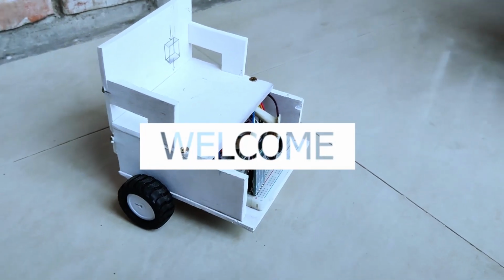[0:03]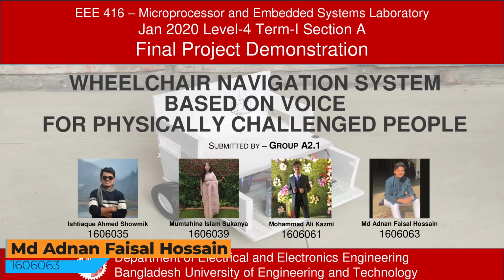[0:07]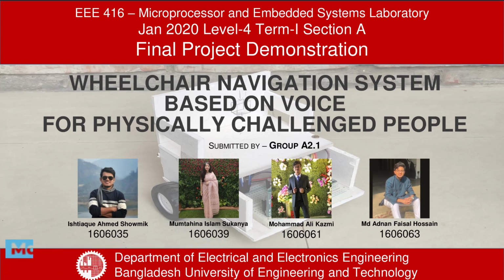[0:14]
Our project is a Wheelchair Navigation System based on voice for physically challenged people. Here you can see our project outline.
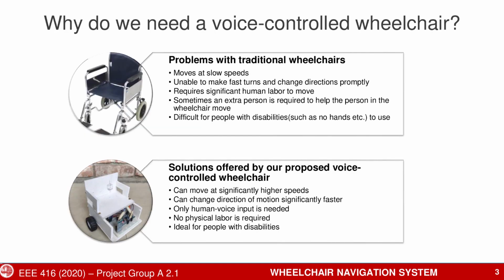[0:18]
So why do we need a voice-controlled wheelchair? Traditional wheelchairs are slow, unable to change directions quickly, and require significant human labor to move. They are especially difficult for people with disabilities to use. Our proposed voice-controlled wheelchair solves these problems by moving at higher speeds with better navigation systems, and it operates only on human voice without the need for any physical labor.
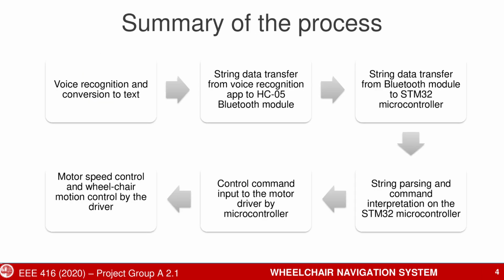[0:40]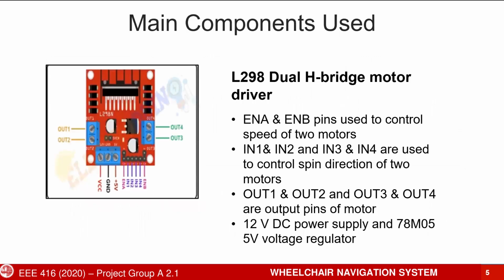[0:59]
Here is a summary of our process. First, we perform speech recognition on the input voice command and convert it to text. We then transfer the text from our mobile device to the STM32 microcontroller via the Bluetooth module. The microcontroller interprets the command and sends it to the motor driver, which then controls the speed of the motors connected to the wheels. There are three main components.
First, we have an L298 motor driver. It has two enable pins used to control the speed of the motors. In1 to In4 pins are used to control motor direction.
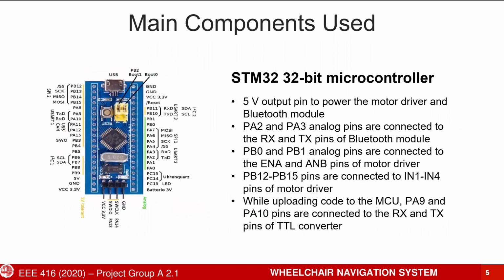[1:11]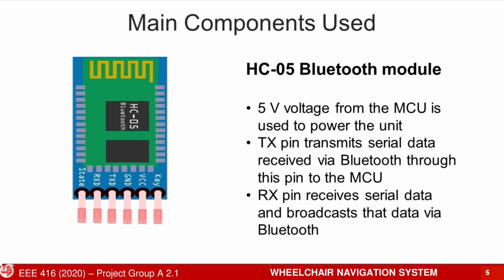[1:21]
Next, we have our STM32 32-bit Blue Pill microcontroller. STM32 receives UART serial data from the Bluetooth module using an interrupt-driven reception method. Finally, we have our HC-05 Bluetooth module. We use the BT Voice Control for Arduino app to perform speech-to-text recognition.
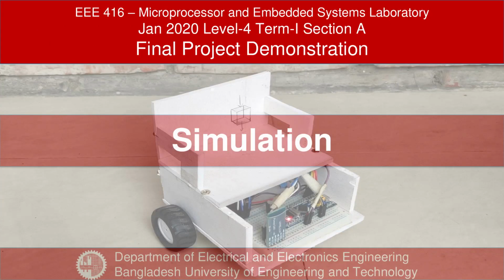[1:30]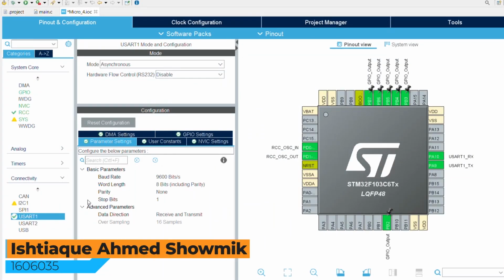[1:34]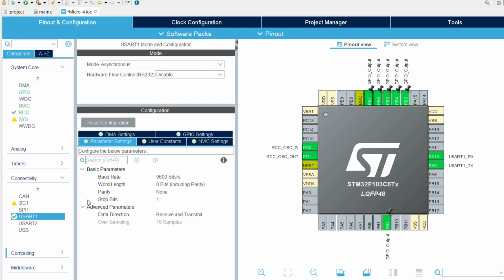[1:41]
Now I will explain how we programmed our microcontroller unit using STM32CubeIDE. We used this platform to generate the hex file for simulation in Proteus 8.6. Here we can see the pin configuration.
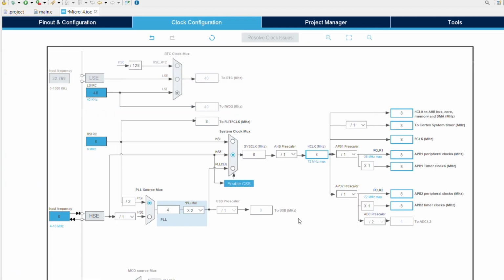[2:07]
We are using pins 9 and 10 as UART1 pins for serial communication with the Bluetooth module. The baud rate is set to 9600 bits per second. As you can see, pins PB2 to PB7 are used as output pins that will serve as the control pins of the motor driver. Now, in clock configuration, the operating frequency was set to 8 MHz and the rest of the parameters are set to default.
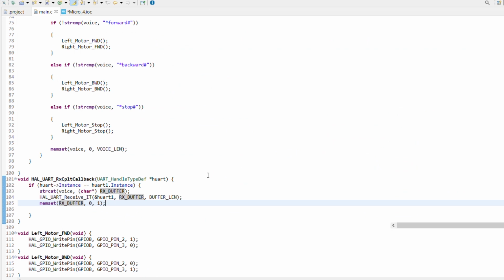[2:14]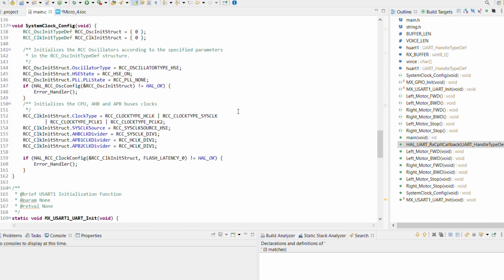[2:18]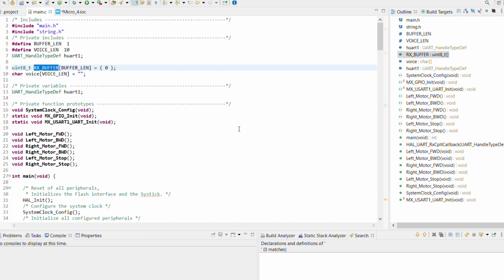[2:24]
Now, as we jump to the source code, we can see the auto-generated clock configuration function, our UART1 and GPIO pins initialization function. We defined a variable RX buffer to act as the buffer for incoming data, and a string variable voice to hold the voice string. We created a few functions for motor control.
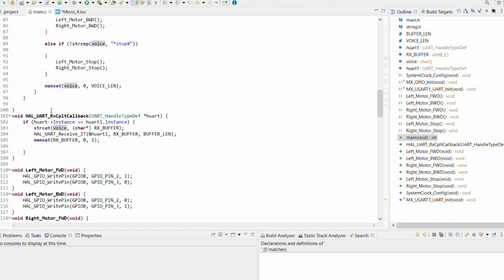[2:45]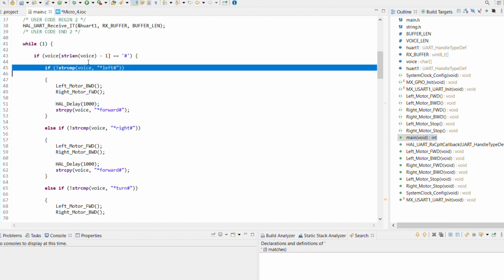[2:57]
In the main function, we are invoking the UART receive IT function to receive serial UART data in interrupt mode. After each byte is received, a callback function is called, and the received character is concatenated to the voice string. In the while loop, we are searching for the hash symbol that marks the end of a string. The voice string is compared with predefined commands. If a match is found, the intended operation is performed, and the voice string is reset to 0 to restart the procedure.
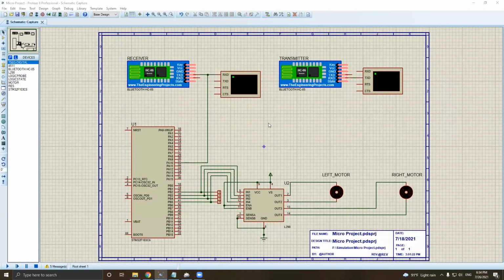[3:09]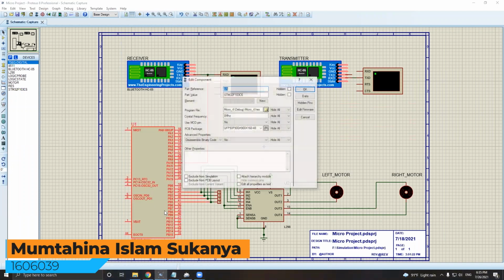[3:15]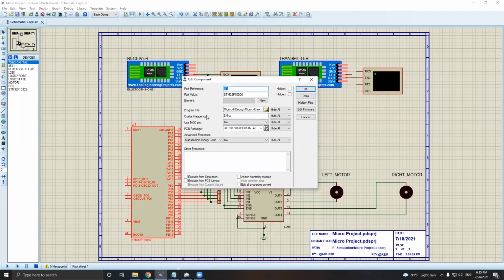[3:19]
So this is the simulation part of our project. Here we've used an STM32 IC. Inside the IC properties for the simulation, we've used the hex file that we generated from the STM32CubeIDE as the program file. For crystal frequency, we've set it to 8 MHz, which is what we used in the STM32CubeIDE as well.
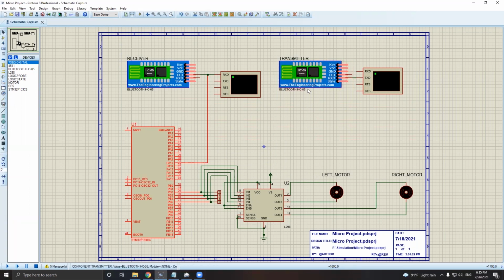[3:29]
Along with this IC, we're also using two Bluetooth modules. One is the transmitter and the other is the receiver. We're also using a motor driver and two motors to complete our simulation setup.
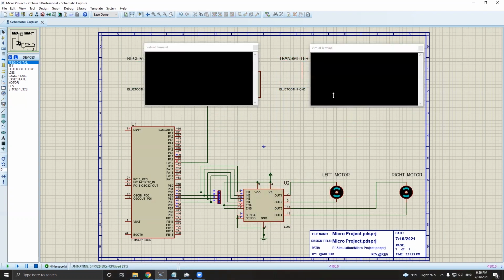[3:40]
Now, if we move on to the operation part of our simulation, we'll be typing the commands into the virtual terminal. The transmitter side will not be visible, but the receiver side will be visible. So first we'll be typing in the command forward, and we can see that both the motors are starting to rotate clockwise.
And now if we type in another command, backward, both the motors are turning counterclockwise in the same direction. Now if we type in the command left, then to turn left, at first the motors will be turning in opposite directions, and then they'll start turning in the same direction, because after taking the left turn, the device will be starting to move forward.
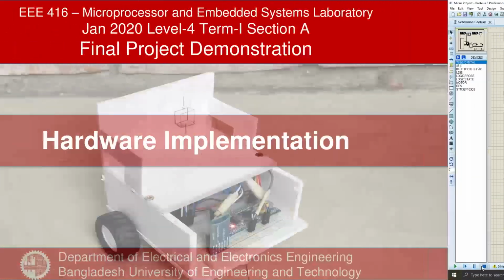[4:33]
Now if we type our command right here, we can see again the motors are turning in the opposite direction in the beginning, then eventually they start to rotate in the same direction and the vehicle goes forward. And finally, if we type in the command stop, then the whole device turns off and thus executes the whole operation, and that's the end of our simulation project.
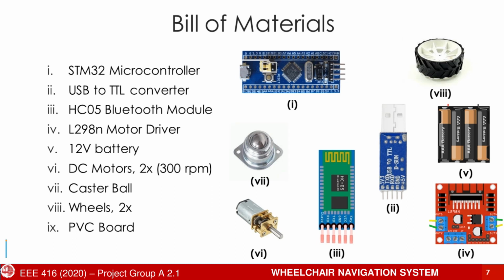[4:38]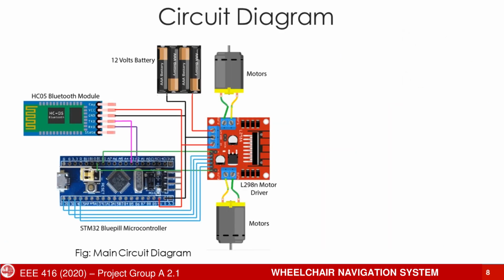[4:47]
Hello, I'm Roll61, and now I'll be talking about the hardware implementation of our project. Here you can see a list of hardware materials that were used for our project. Here is the circuit diagram for our project.
STM32 microcontroller is the main programming unit of our whole project. HC05 Bluetooth module is being used for wireless communication. The commands are received by the Bluetooth module, which are sent to the microcontroller. After that, according to the instructions of the microcontroller, the L298N motor driver operates the two motors connected to it. We are using two 300 RPM DC motors and they have rubber wheels attached to them.
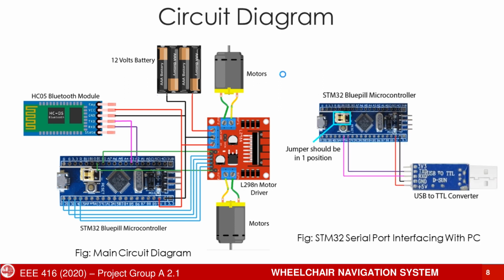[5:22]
Finally, we have designed a wheelchair prototype using PVC boards and there is a caster ball in the center to balance all the equipment on it. The serial port of STM32 is interfaced with a computer by using a USB to TTL converter with the following connection. We are using Arduino IDE to program the microcontroller. Now we will have a look on our source program.
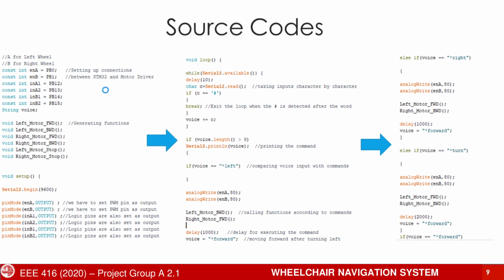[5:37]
So initially we are declaring all the ports that were used in hardware connection. After that, some functions are specified according to all the possible commands by a user. In the loop function, we are checking for inputs given by the user. The input is taken character by character and the hash symbol indicates the end of an input string. After that, the input string is stored in the string named voice.
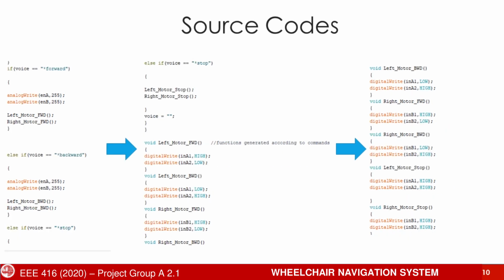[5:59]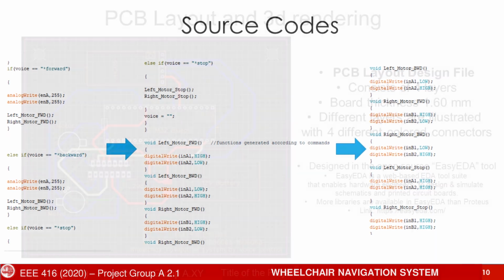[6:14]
Our wheelchair can perform 6 automated tasks and so we match the input string with these 6 commands. If there is a match, then the wheelchair executes the command accordingly with the help of our specified functions. These functions mainly control the wheel movements according to the instructions that are given.
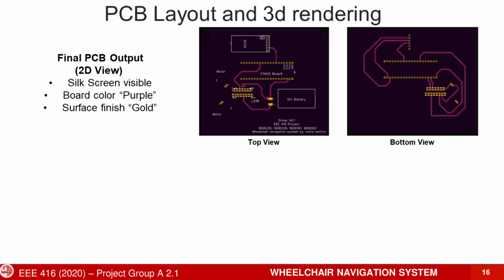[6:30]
For our project, we have also designed a PCB layout. Here you can see our PCB layout design file. It consists of 4 layers, which are illustrated with 4 different colors. PCB is designed with open source EasyEDA tool. Here you can see our final PCB output, and here is the 3D rendering of our PCB.
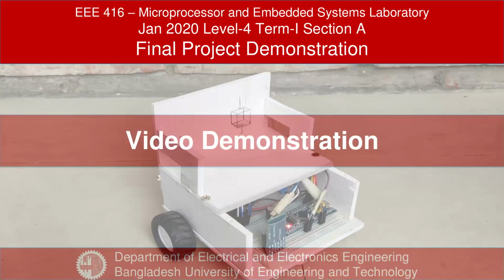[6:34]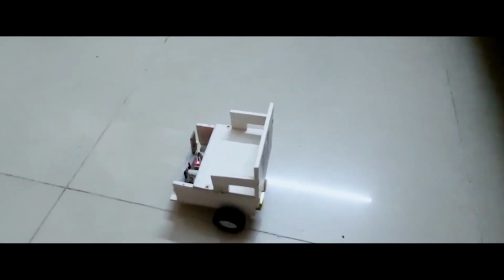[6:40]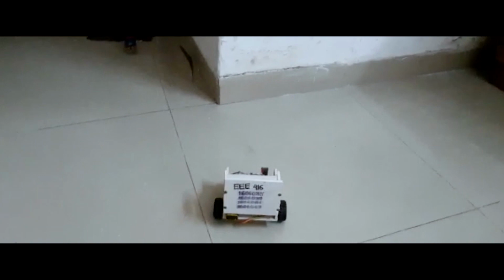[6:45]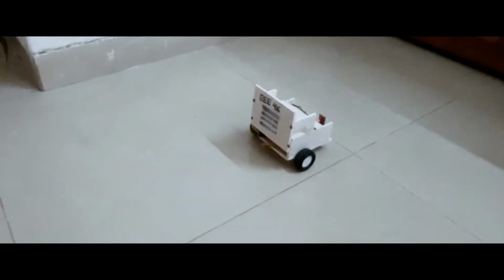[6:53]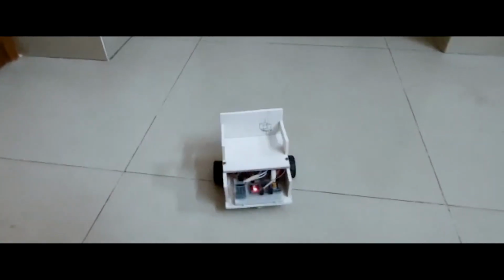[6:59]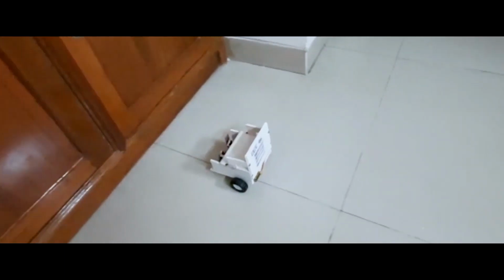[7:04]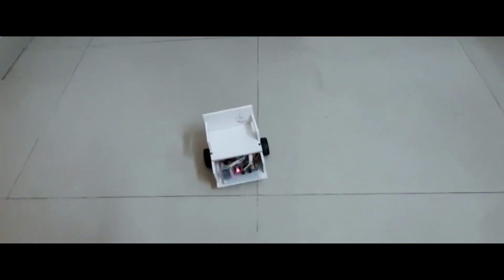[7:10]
Forward. Right. Backward. Turn. Backward. Left. Stop.
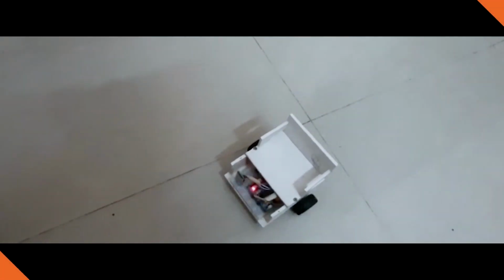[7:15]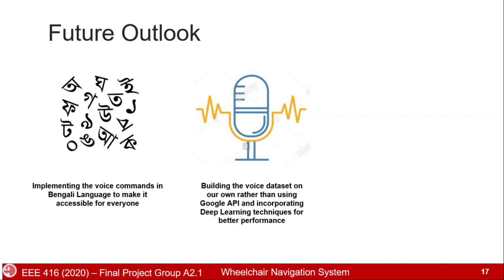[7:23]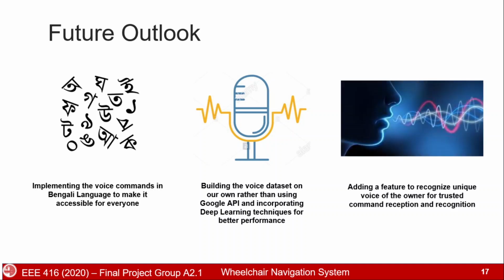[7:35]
So first of all, we could implement the voice commands that we used here in Bengali language so that it becomes accessible and usable for everyone. In the future, we can build the voice dataset that we used here on our own rather than using the Google API, and we could also incorporate deep learning technique here for better performance. We could also add an extra feature to recognize the unique voice of the owner so that the command reception system is very trusted and secure.
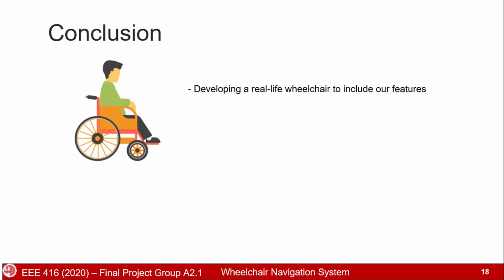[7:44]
To conclude, we intend to include all of our features in a real-life wheelchair. We want to optimize our system further for mass-scale production.